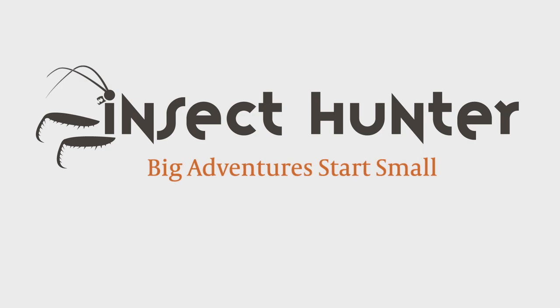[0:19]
In today's episode of the Insect Hunter, I'm going to show you guys how to make your very own kill jar so you guys can preserve insects on the go while you're in the field.
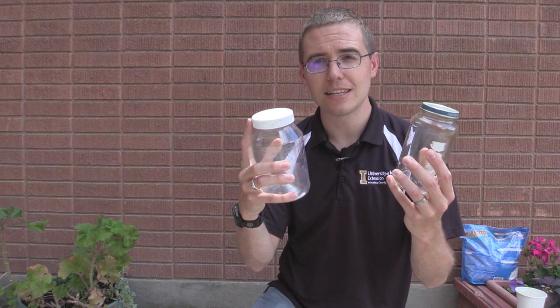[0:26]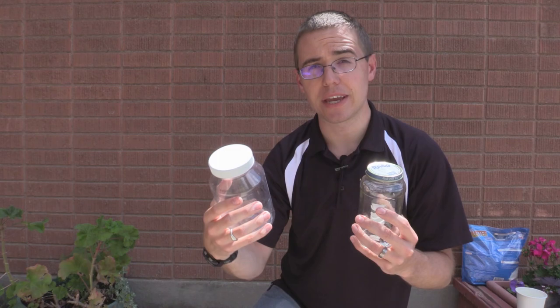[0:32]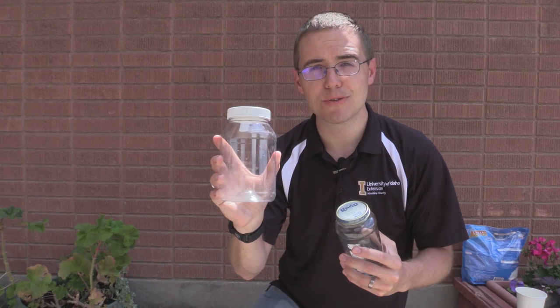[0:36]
So first off, let's talk about what you're going to need to make a kill jar. You're going to need a jar. You can use plastic or you can use glass. I personally prefer plastic because it's much less likely to break. And in some parks, you can't take glass jars because they're worried that it's going to break and cause some harm. So usually plastic is probably the safest bet, but you can use glass if you want.
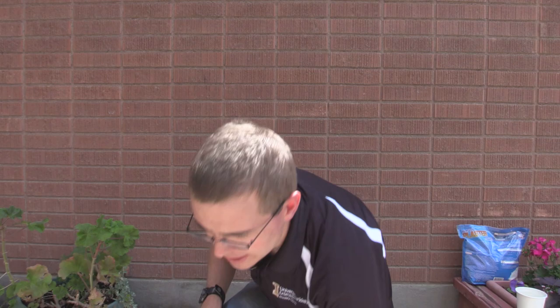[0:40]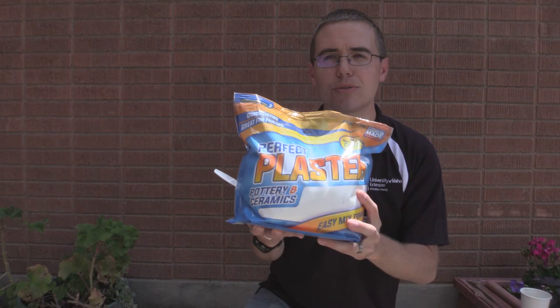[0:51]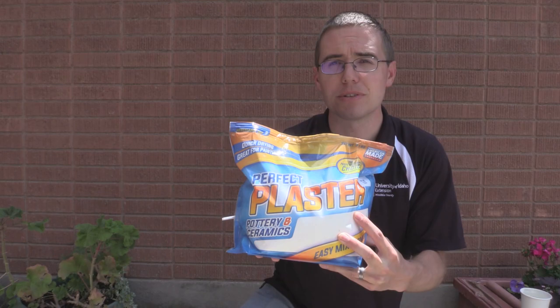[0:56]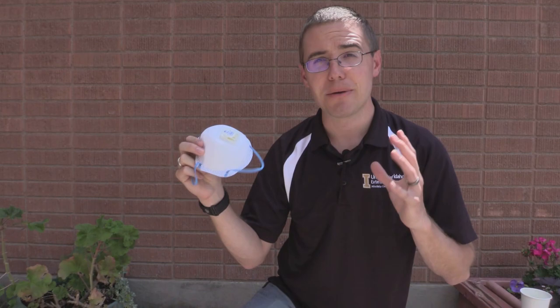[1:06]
You're also going to need some measuring cups, a spoon. You're going to need some water. And you're also gonna need some plaster of some sort, plaster of Paris. I think this is perfect plaster. It doesn't matter what the brand is, but you need plaster as well. And then I have also got a NIOSH approved respirator just because I like to be safe, and I encourage you to be safe and careful whenever you're working with different types of chemicals because that's important too. So let's start making this thing.
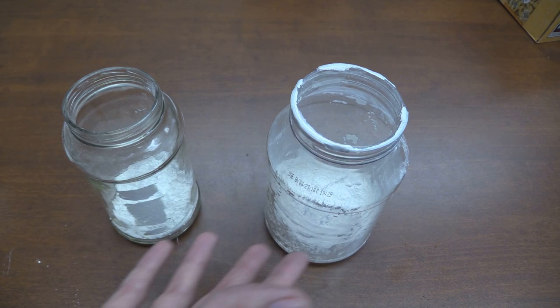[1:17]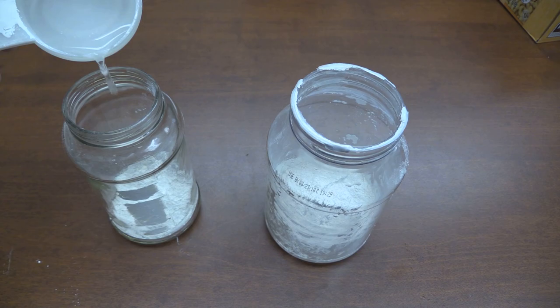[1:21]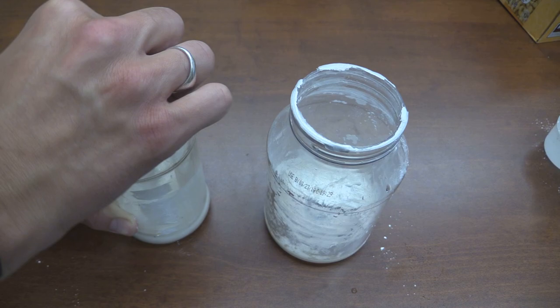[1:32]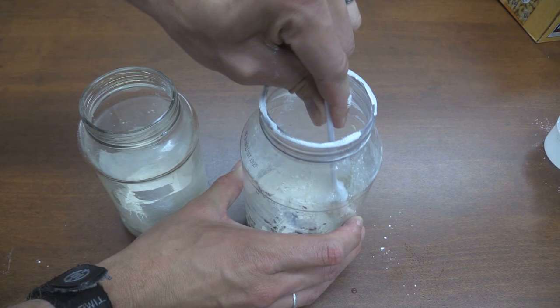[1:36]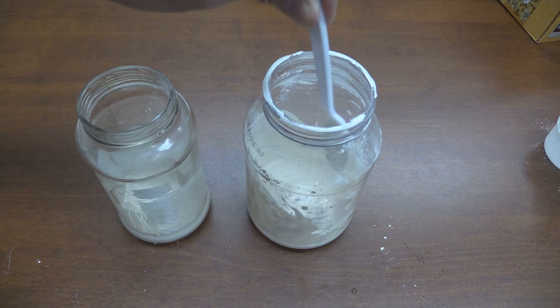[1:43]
So the first thing you're gonna do is you're going to mix up the powder from the plaster with the amount of water as indicated on the package, which I'm doing here. And make sure that you follow the label. When I did this, I made sure to wear a respirator because I wanted to be safe and follow the label. Because whenever you're working with chemicals, you just want to make sure you're careful. So after you've mixed that up in there, you want to make sure it's down there at the bottom and very well mixed. And then you're going to let it dry. So that's the first thing we've got to do.
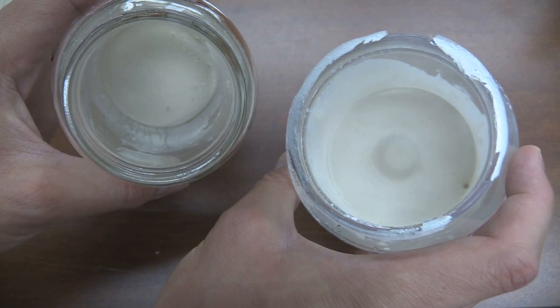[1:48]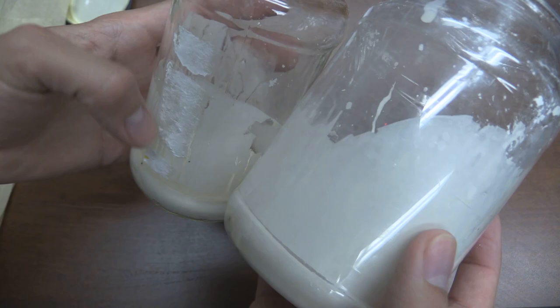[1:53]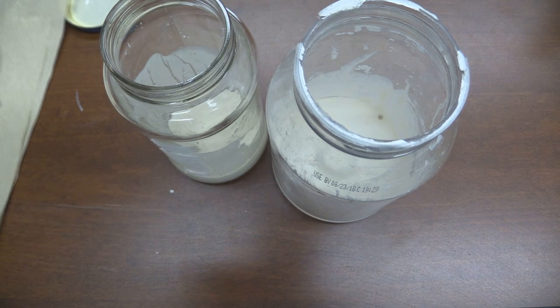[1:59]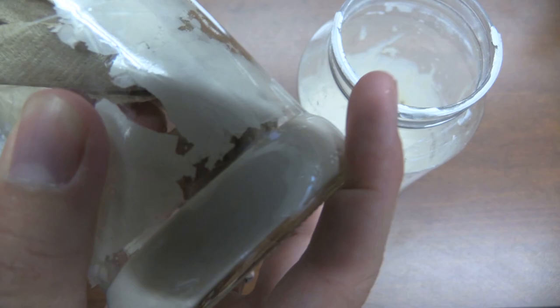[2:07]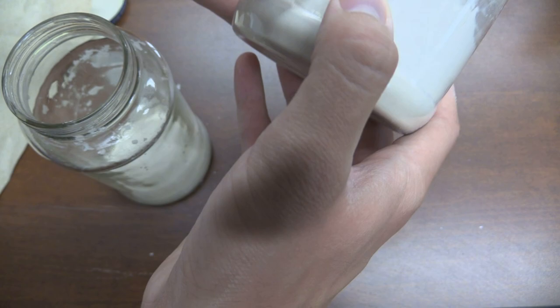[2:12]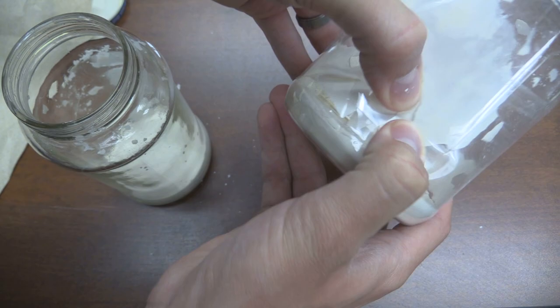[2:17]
So I left these overnight, and as you can see, they've pretty well dried out. I'm going to take a paper towel, wipe off some of this stuff here on the edges, and then I think we'll just about be done so I can show you how to use it. Just gonna get that stuff off of the sides just so we can see inside. I don't think it'll hurt anything. It just doesn't look as nice. There we go. That's an easier way. Just kind of poke it until it comes off. That's seeming to kind of get it off a little bit better.
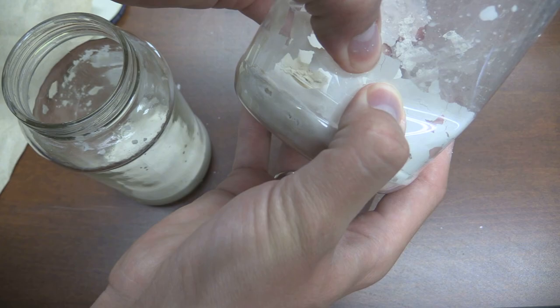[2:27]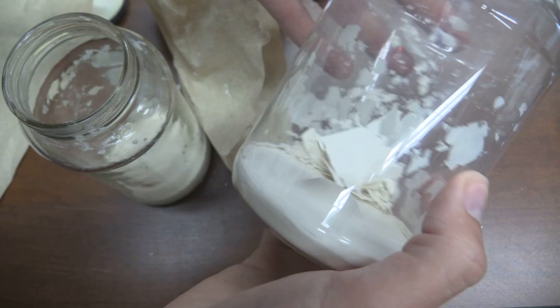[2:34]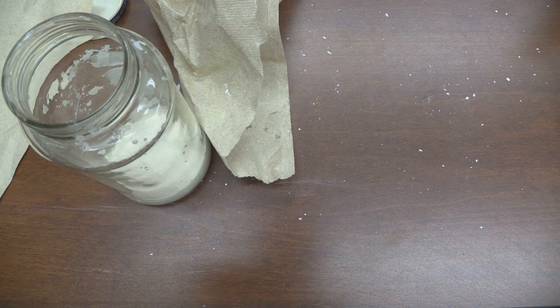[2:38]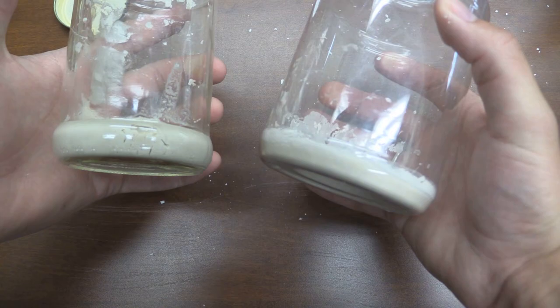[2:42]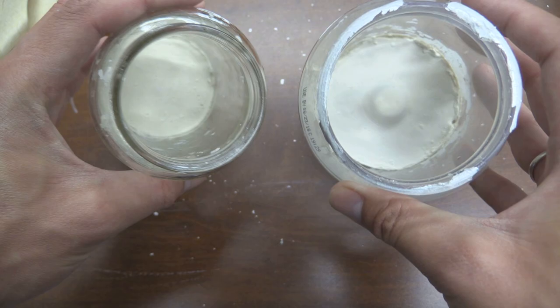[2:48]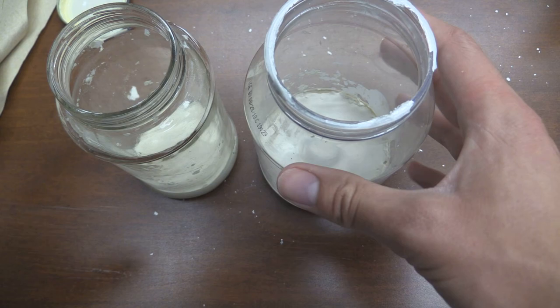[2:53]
With the glass, obviously, you could not do that. Close enough. I'm just going to dump that stuff in the garbage. All right, that's about as clean as I'm going to get them for right now. But as you can see, there's still a little bit stuck on there, but it'll just kind of go away as we go. Now that those are pretty well dried and pretty well cleaned off, I'm going to show you how to use them. So what you're going to do is you're going to take some
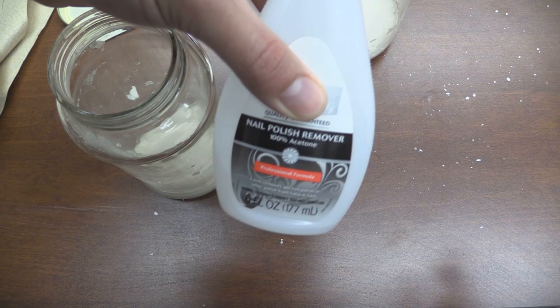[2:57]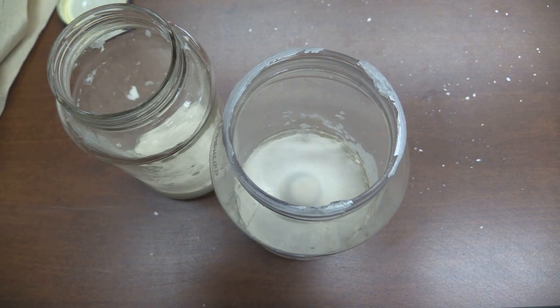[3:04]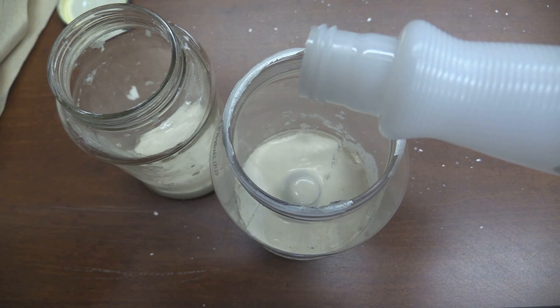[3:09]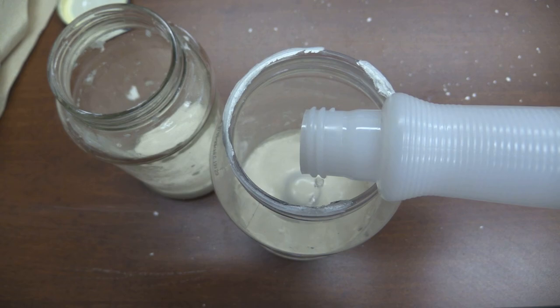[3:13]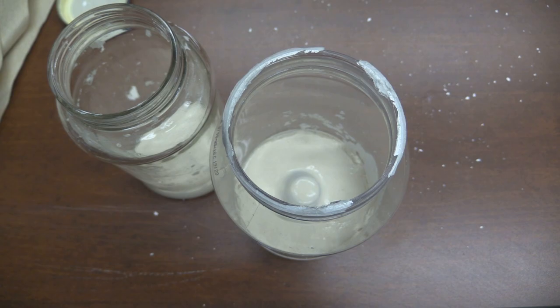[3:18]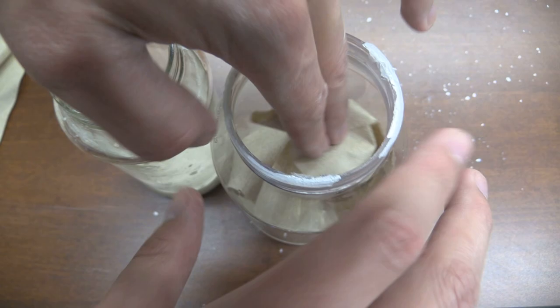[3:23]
nail polish remover here, and then you're going to just pour that into the bottom. And I'll kind of show you. You should see some kind of bubbling. Just about that much. You just kind of want to get the surface covered. And what should happen is the plaster should absorb the nail polish remover or the acetone that you use. And then you want to take a paper towel, put that in, and then you're going to put the lid on and you'll leave it there.
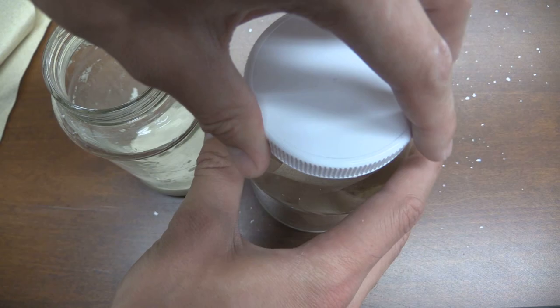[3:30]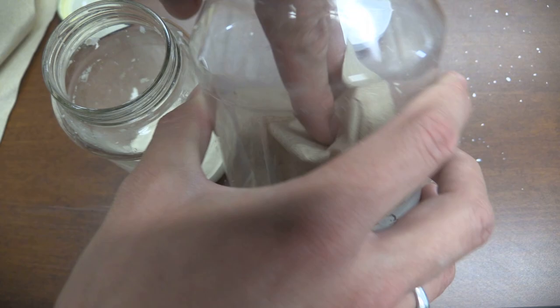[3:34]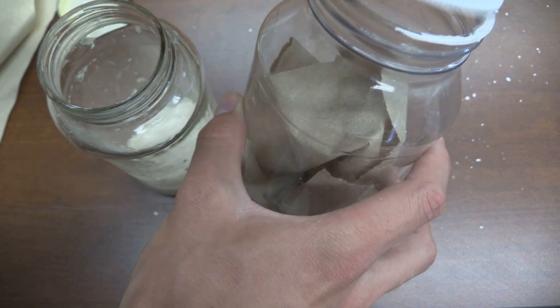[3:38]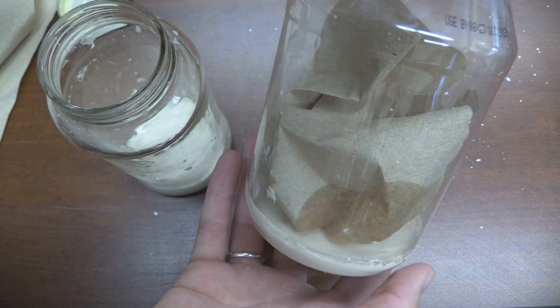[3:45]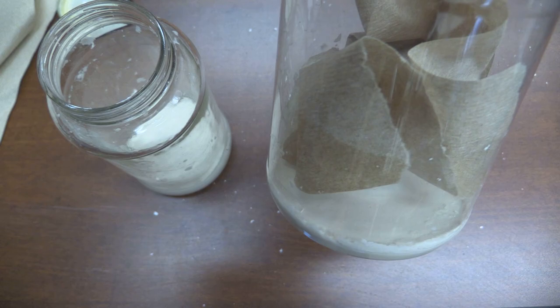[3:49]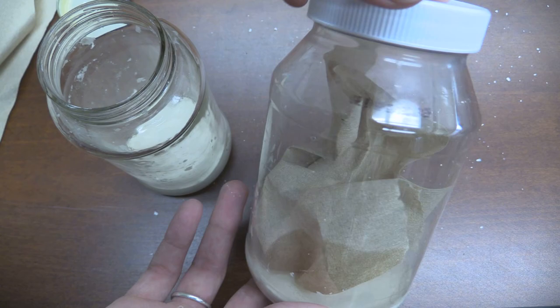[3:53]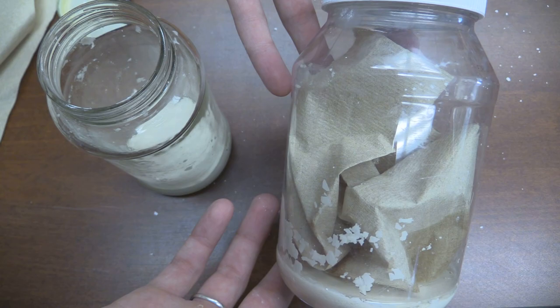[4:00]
You might want to push paper towel as far down as you can. That's usually helpful. That way then there's more room for insects. Paper towel will help to kind of hold some of the chemical and keep it away from the insects, but also gives them something to grab onto. So see, it hasn't quite absorbed it all in there. So a little bit's going into the paper towel. Hopefully it'll just kind of absorb into the plaster. If you leave this for about 5 minutes, then the whole thing will be charged and ready to go. And then you can start putting insects in it so that you can preserve them for a collection.
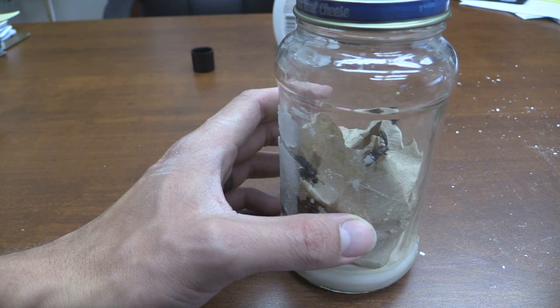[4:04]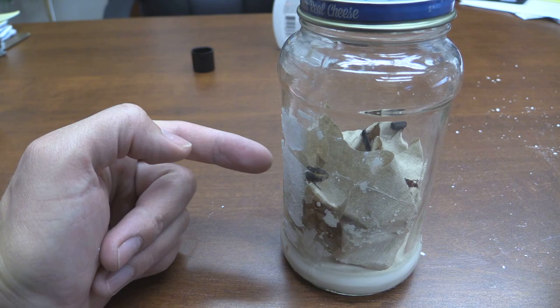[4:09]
Depending on the size of the beetles or the things you're working with, it'll take just a couple minutes for them to stop moving, and you will have insects that are ready to be pinned.
The reason I made this video is because I thought I need to go back and redo some of those basic videos that I did in the first place. If you've seen some of my first videos, you'll see that I did them in a very dramatic, goofy way. I decided I think I need to go back and do some of those over in a more serious and straightforward way, just some short, quick videos that talk about each topic.